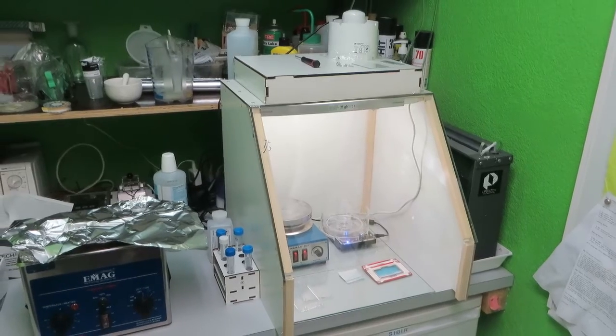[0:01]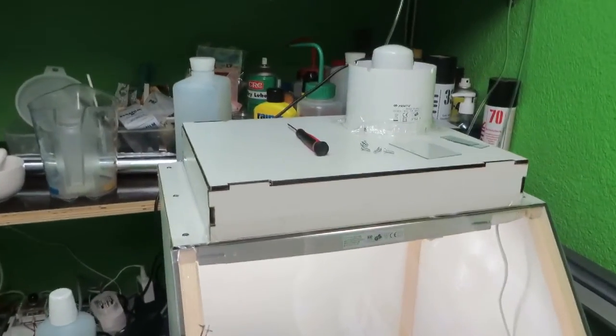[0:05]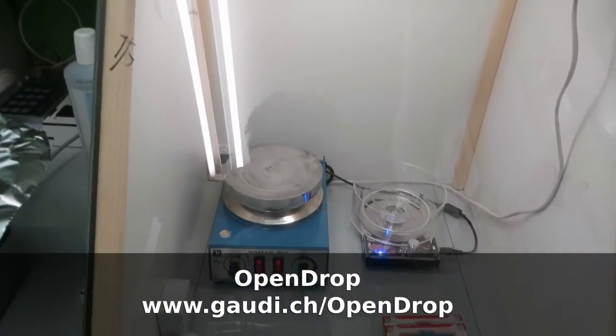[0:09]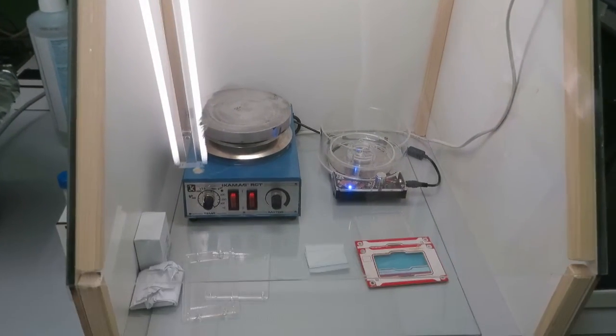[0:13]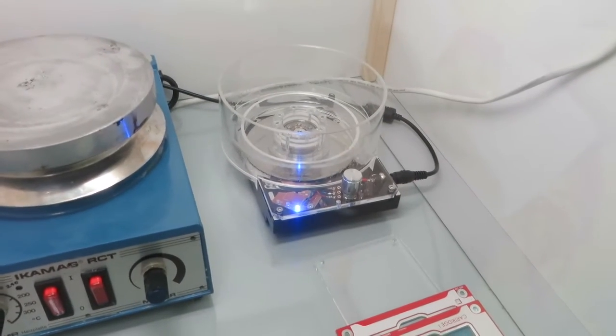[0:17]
Welcome back to the second part of this video showing how to do the hydrophobic coating for the electrowetting on the OpenDrop. To do the coating, I built this simple clean room. It's quite important to work clean if you want to get good coatings. In the clean room, there is a spin coater made from an old hard drive and a hot plate. The air in the cabin is filtered through this HEPA filter.
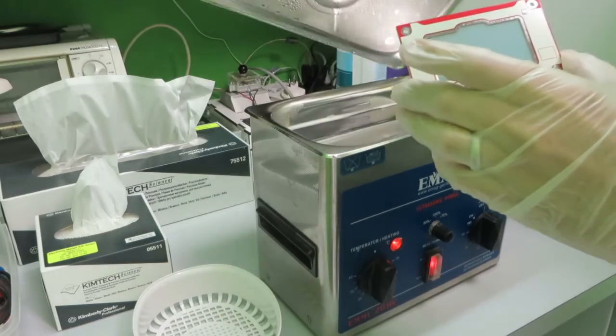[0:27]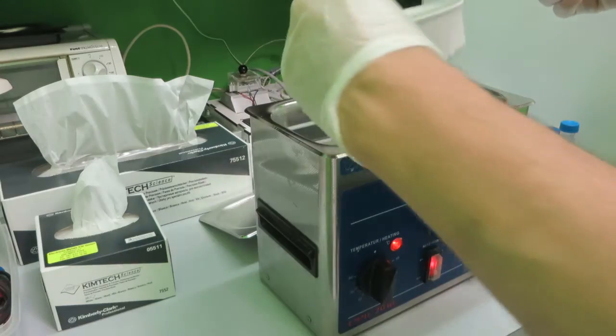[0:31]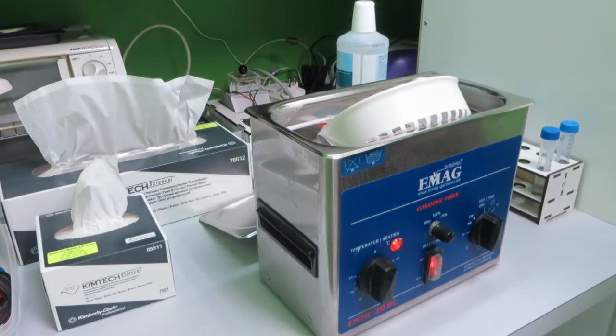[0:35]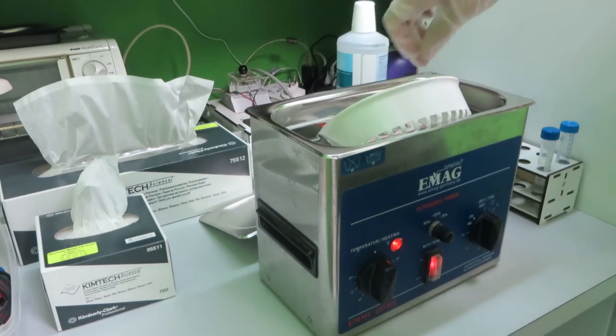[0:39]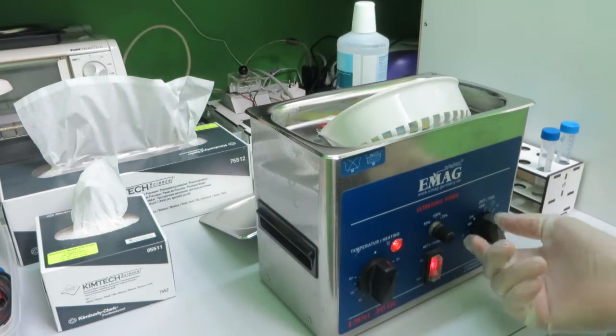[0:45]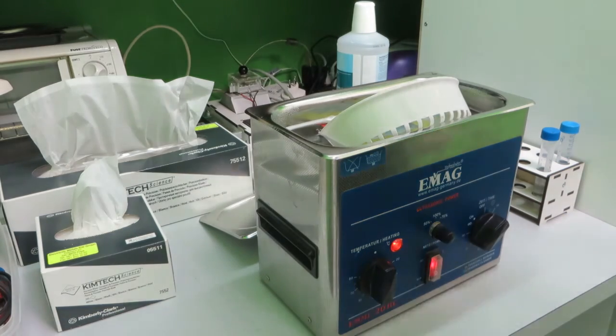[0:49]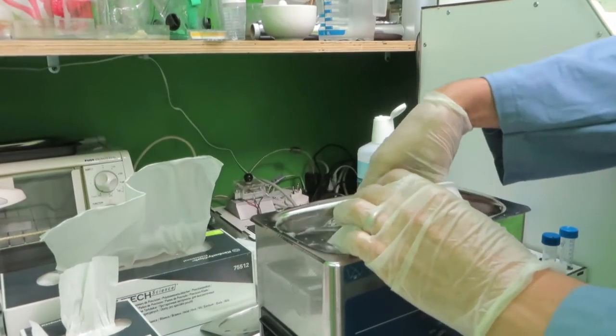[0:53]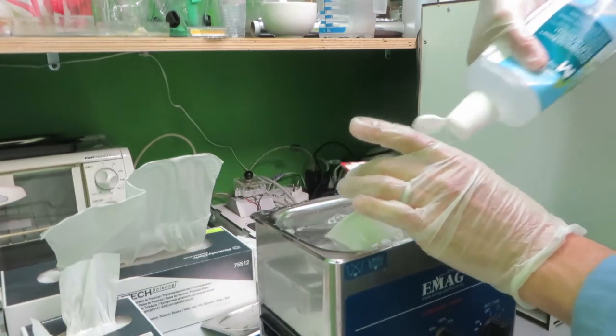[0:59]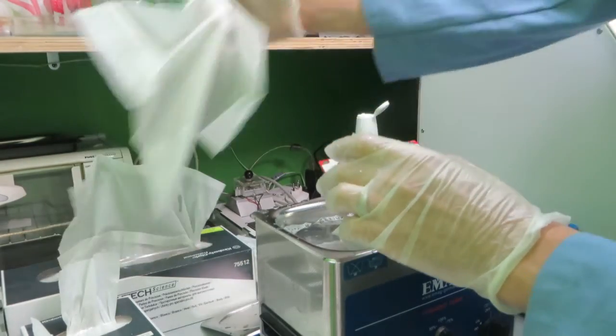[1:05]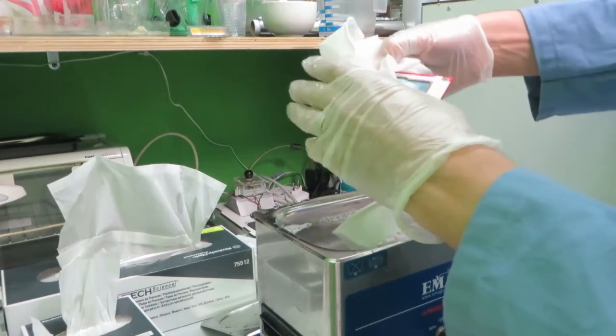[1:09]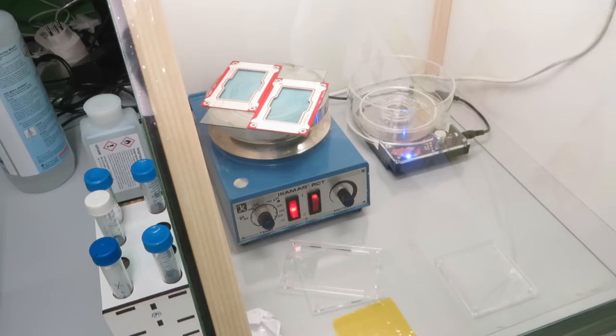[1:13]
First step is to clean the carrier with the foil that we prepared before. For this, I use an ultrasonic bath. The bath contains pure water, a mixture with isopropanol and some soap. I put the carrier in the bath for about 15 minutes at 60 degrees Celsius and then rinse it with pure water. I use this clean room paper to dry the foil and the carrier and then put it on a hot plate at around 80 degrees to completely dry.
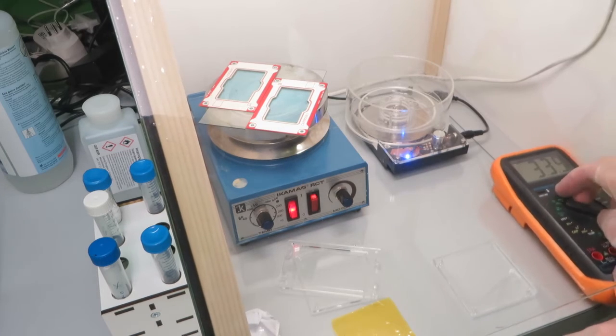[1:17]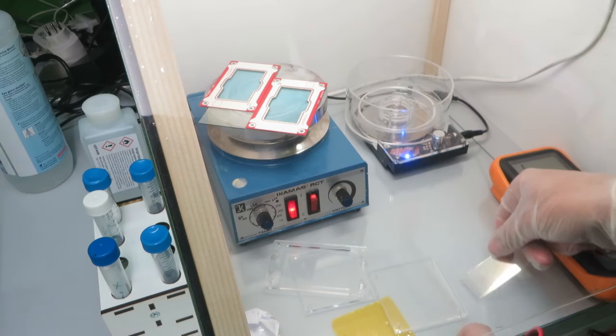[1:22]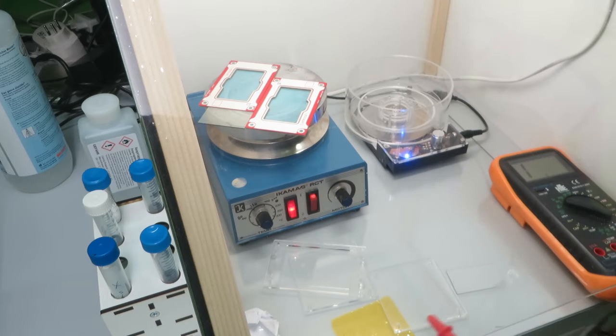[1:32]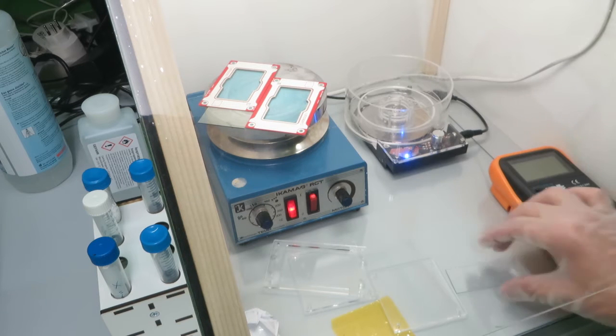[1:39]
Once the coated glass and the carrier are dry, I measure on which side is conductive of this ITO coated glass to make sure to apply the hydrophobic layer to the conductive side. Next, I attach the glass on a plastic carrier using Kapton tape. This carrier has just the right size to fit into the spin coater and is then easier to attach to the spin coater.
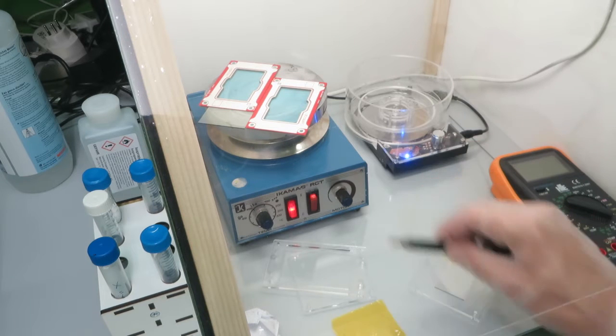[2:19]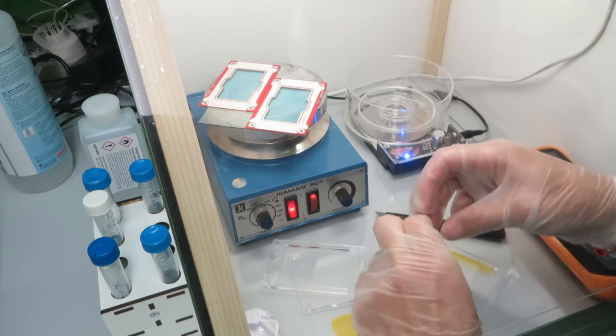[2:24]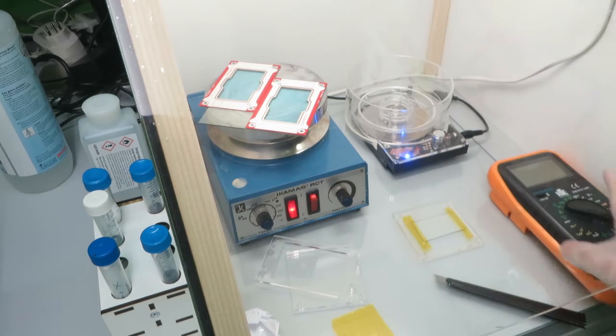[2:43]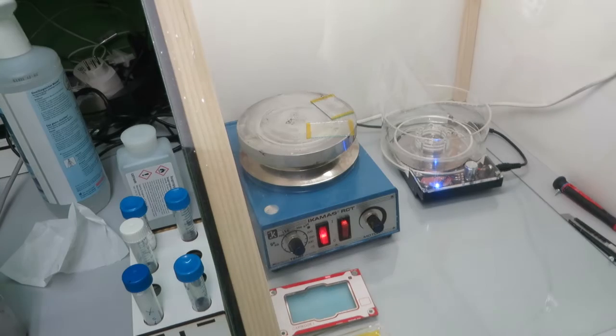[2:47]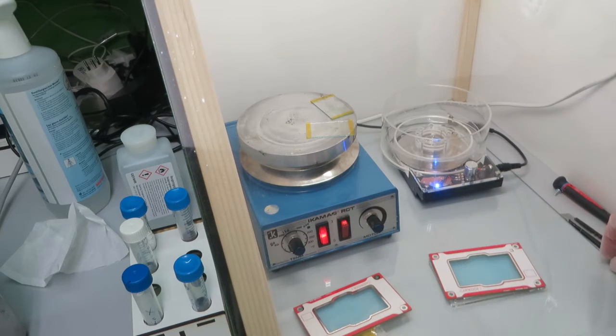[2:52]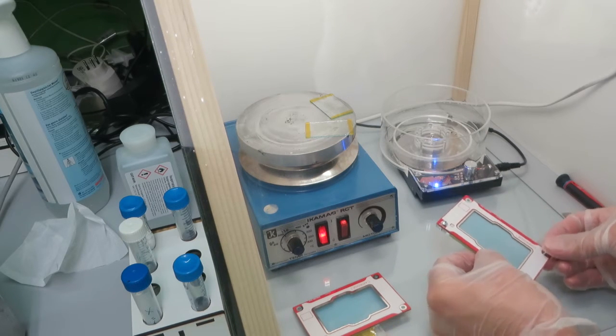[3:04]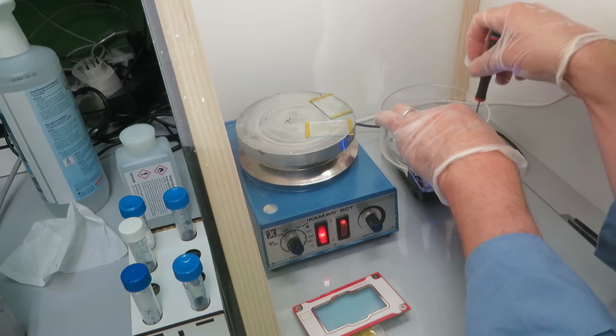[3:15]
I use gloves to make sure that no grease or dust is coming onto the clean surface. Next, I take the carrier with the foil attached and also put it on an acrylic base to install it in the spin coater. I just use small screws for this and screw it onto this rotating base in the spin coater. I may be going to do a separate video on how I built this spin coater. It's basically inspired by a video I found online by Applied Science.
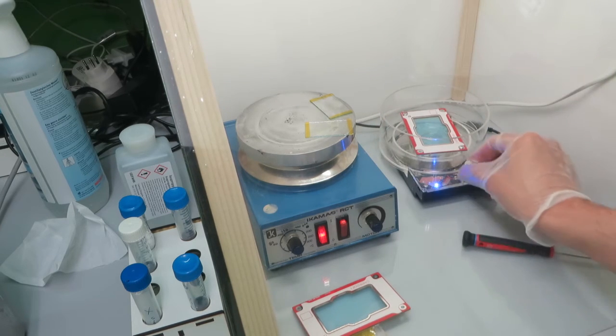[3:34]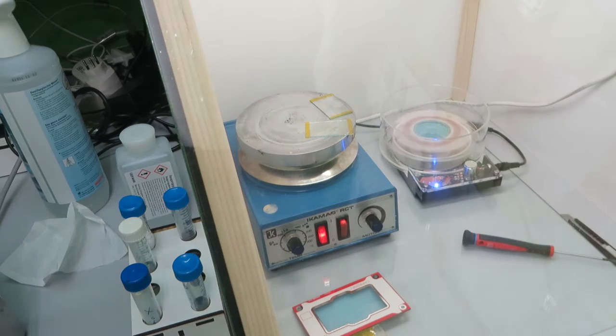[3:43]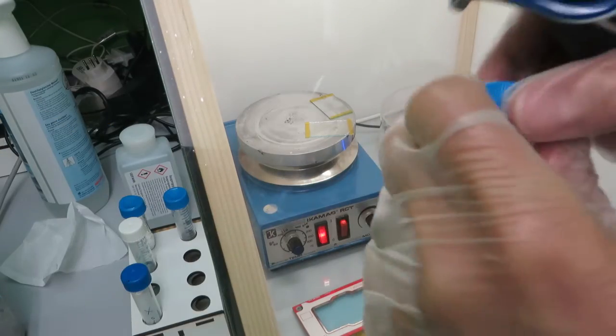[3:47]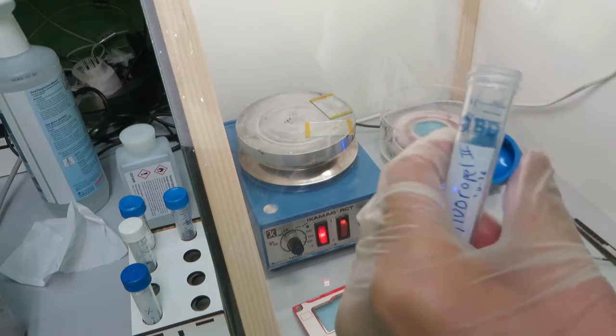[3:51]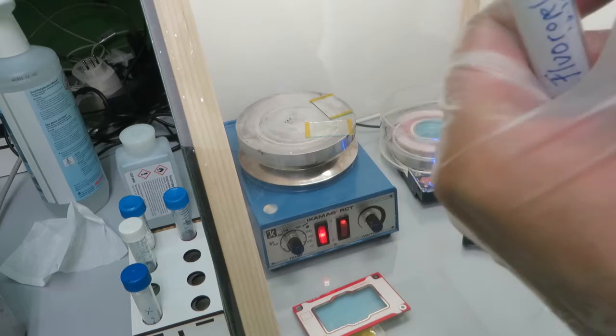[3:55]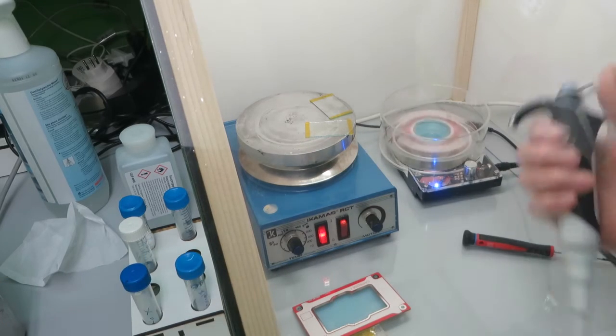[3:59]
Once the carrier is installed, I spin it up and then apply the liquid coating. The coating I use is a Fluoropel from Cytonix. It's a fluoropolymer solution and I use about 150 to 200 microliters and I spin it on the rotating carrier or on the rotating foil.
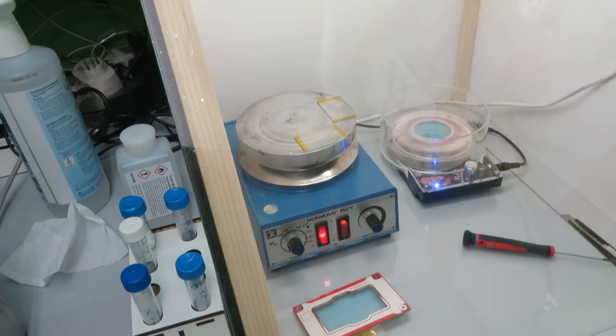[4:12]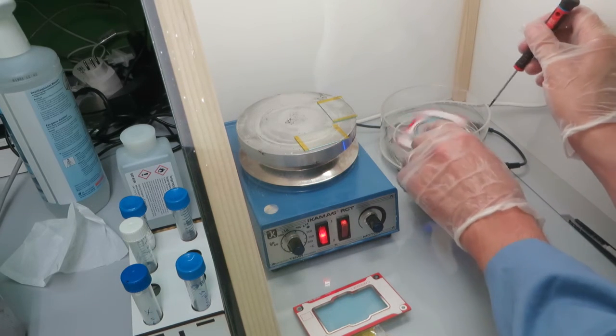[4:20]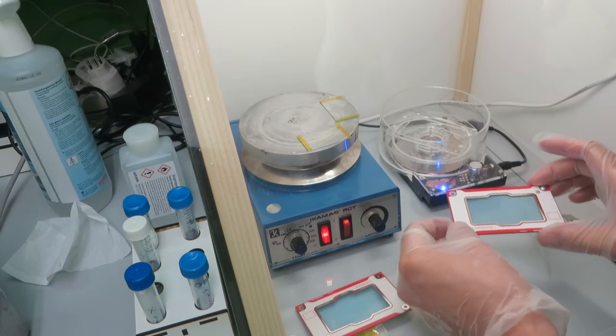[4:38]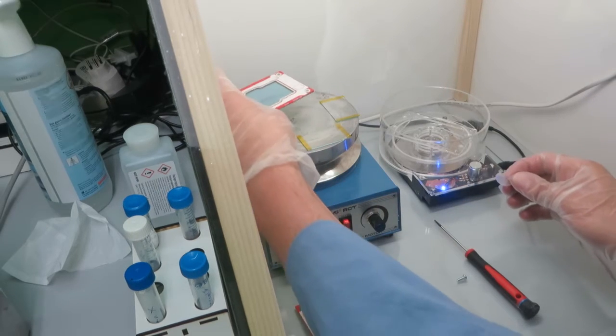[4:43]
I've tested with applying it while it's not spinning and spinning. I'm not quite sure which is getting better results. The spinning is about 30 seconds at a speed of 3000 RPM. Then I remove it and put the carrier back on the hot plate. On the hot plate, I first cure it at 80 degrees for about 20 minutes and then increase the temperature to 150 degrees.
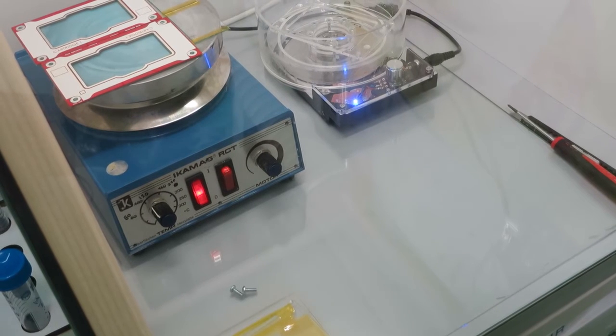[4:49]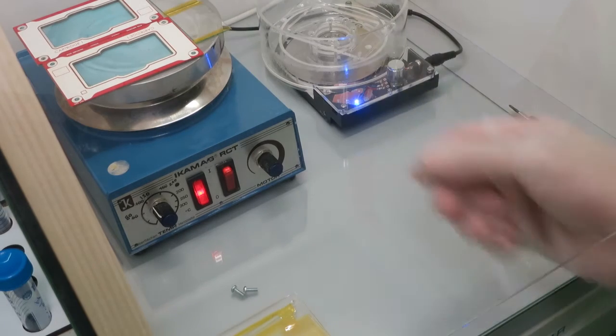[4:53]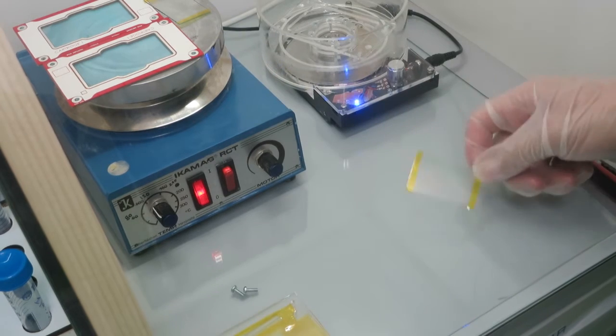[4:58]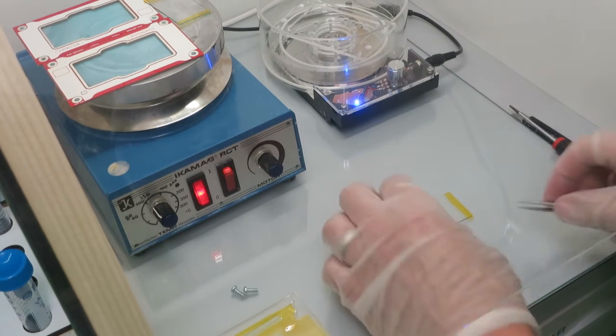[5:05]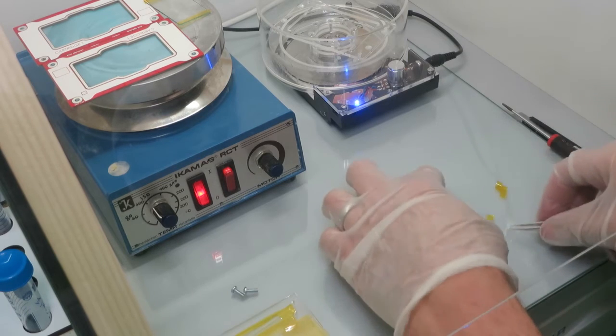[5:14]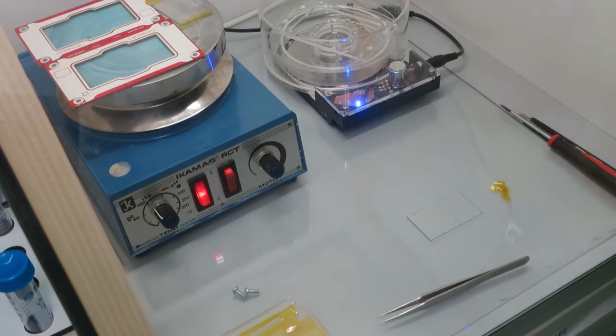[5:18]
I did the same also with the glass slides. It's not shown in the video as I lost a piece of filming there. Once both the glass slide and the film are cured for about half an hour at 150 degrees, I remove the Kapton tape on both sides. This exposes the conductive part of the glass again.
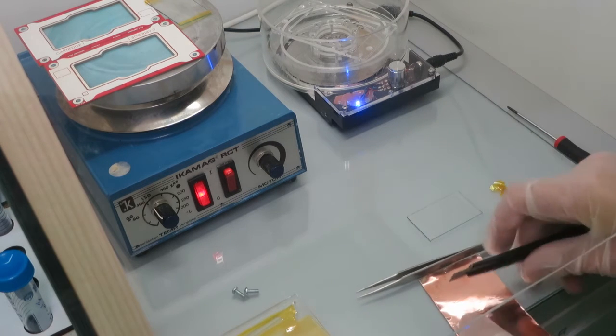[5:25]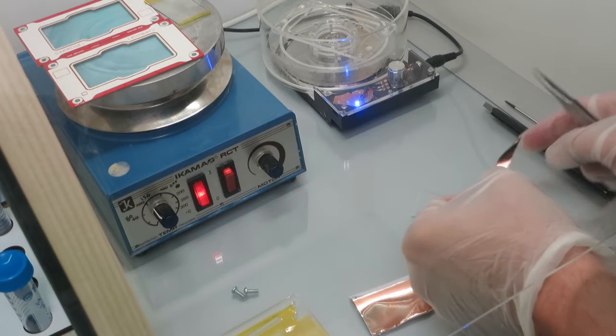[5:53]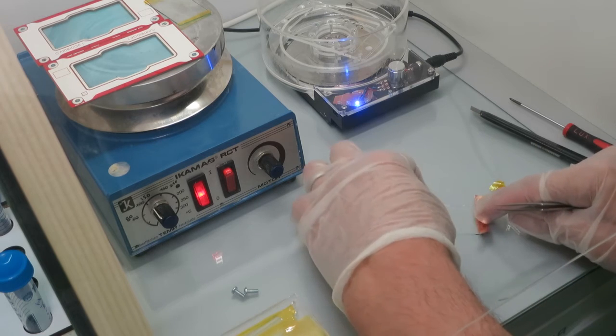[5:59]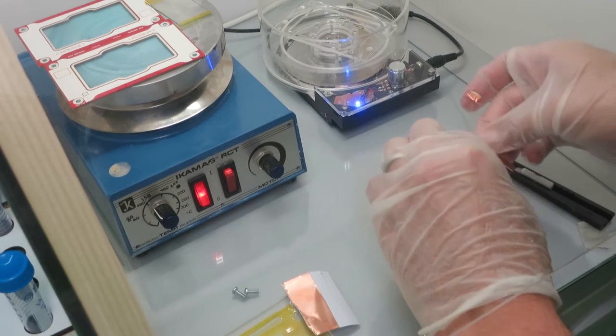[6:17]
And then I use this copper tape, which is a special copper tape which is conductive on both sides. So it has a glue that is conductive on the back. You can get this for quite cheap at SparkFun and other stores that have the same material. And then I take a part of this tape and attach it to the side so that the conductive glue is in contact with the ITO. I cut it to the right size and then I fold over the overlapping part so that I have a connection from the bottom side of the glass to the top. I do this on the second end in the same way.
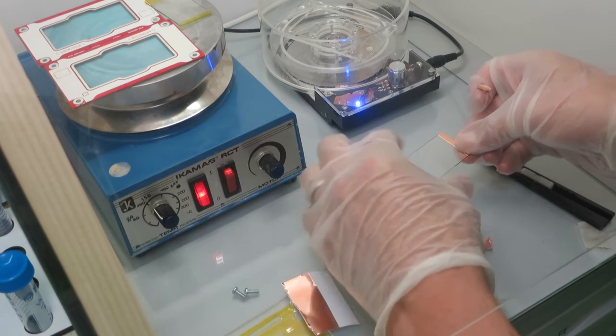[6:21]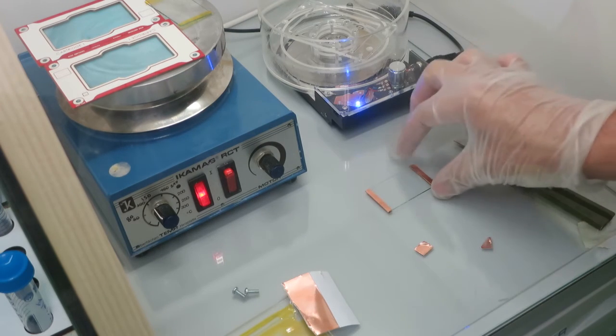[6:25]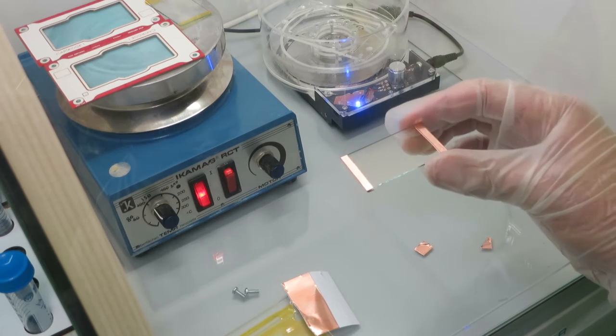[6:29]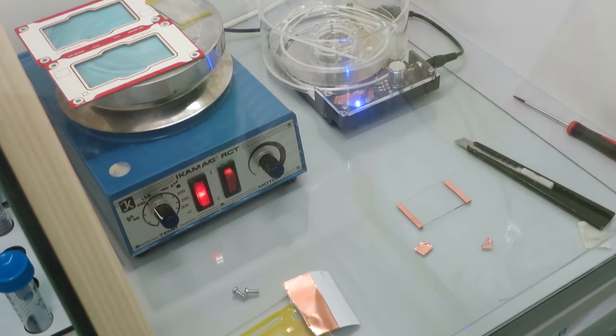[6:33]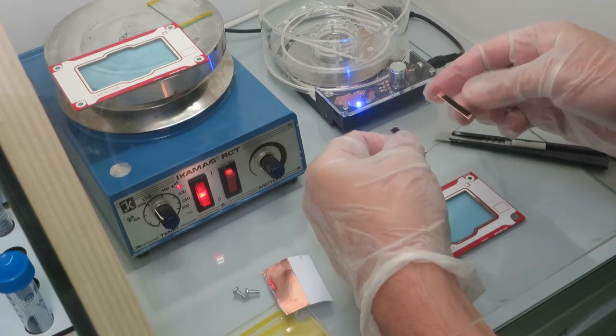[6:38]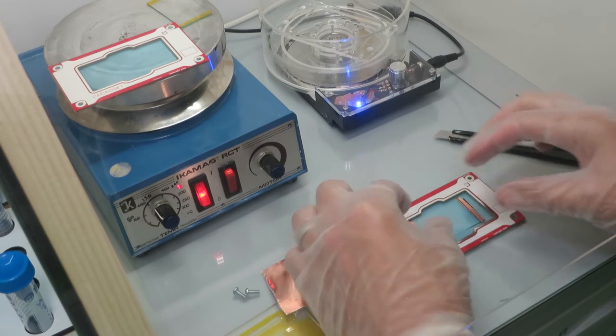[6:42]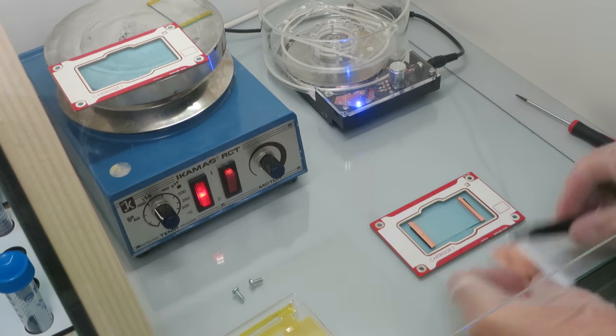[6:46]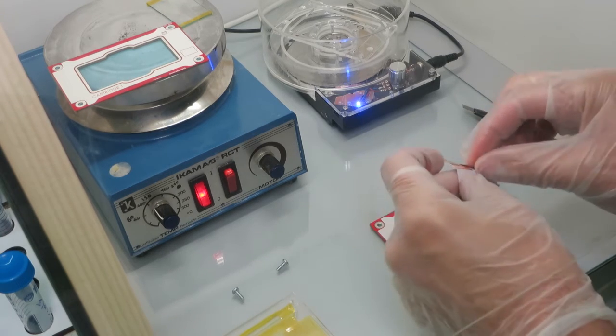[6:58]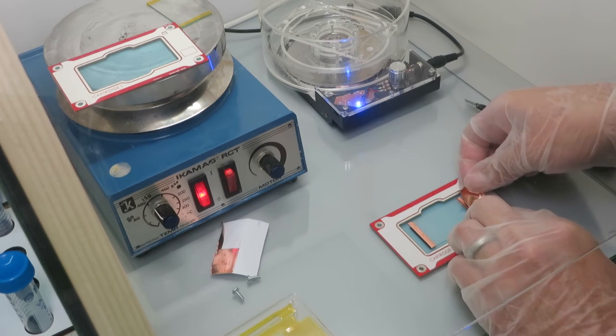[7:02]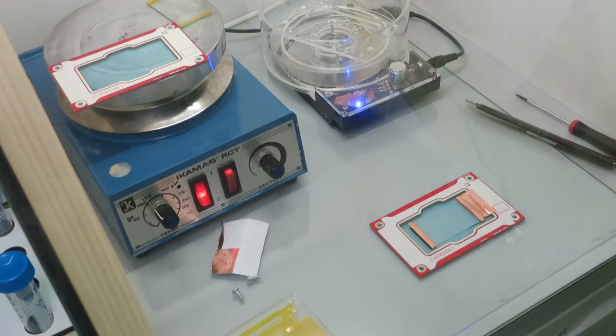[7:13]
Here I put on top another piece of just regular black tape to make a bigger gap. You want to experiment a bit with the gap that you want to have between the foil and the glass. It's between one or two layers of tape I found to be best. Next, I attach another piece of this double-sided copper tape to make the contact between the glass slide and the frame of the carrier. This PCB carrier has a metallic frame, as you can see, so then it can be connected to the ground or to the feedback of the device.
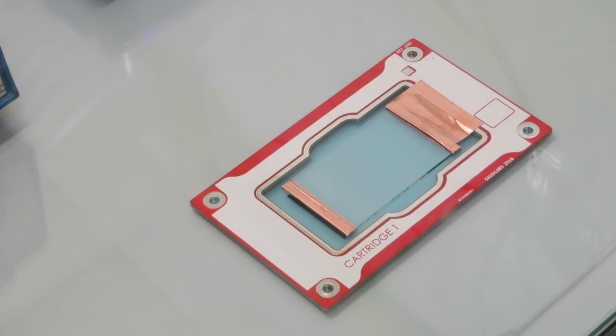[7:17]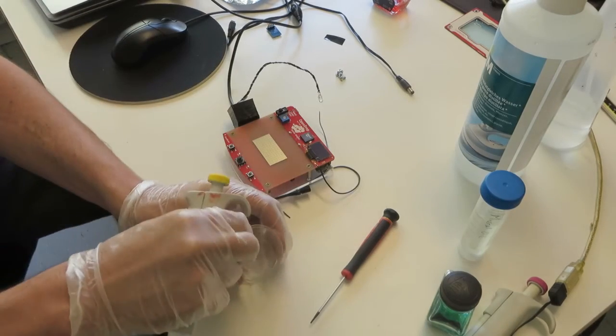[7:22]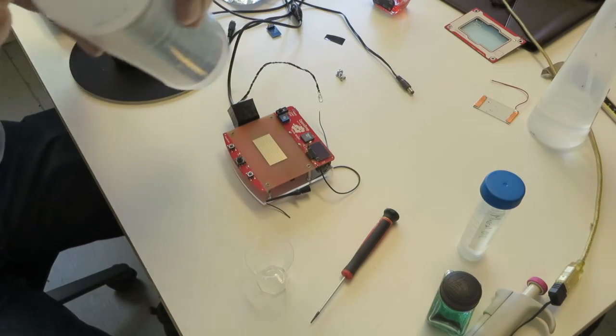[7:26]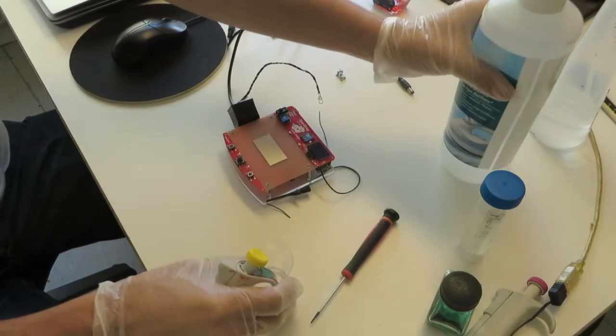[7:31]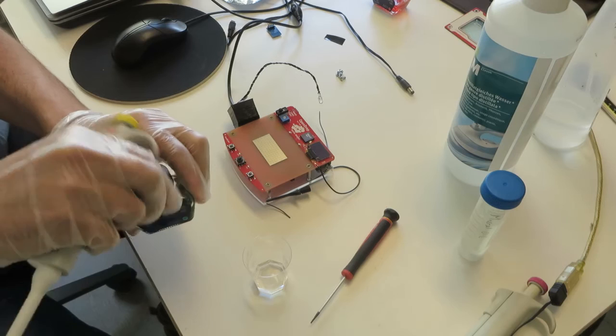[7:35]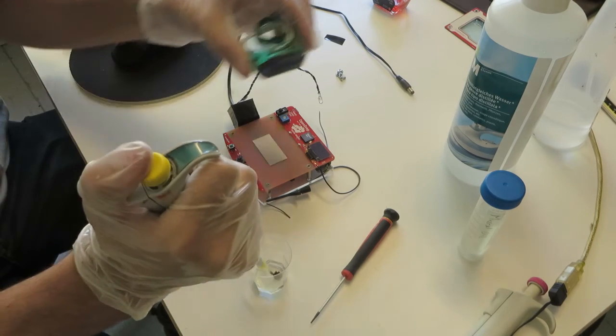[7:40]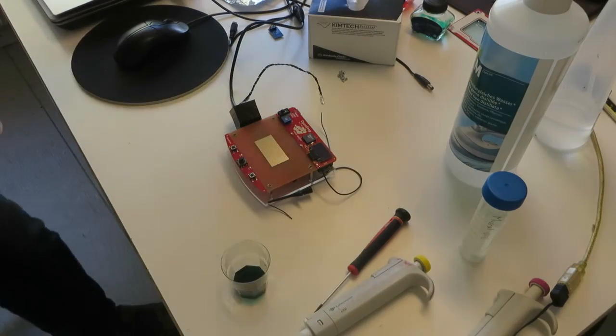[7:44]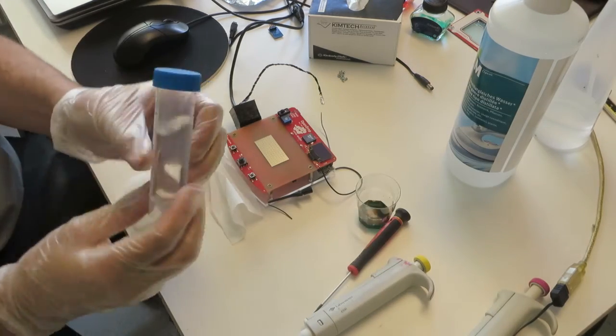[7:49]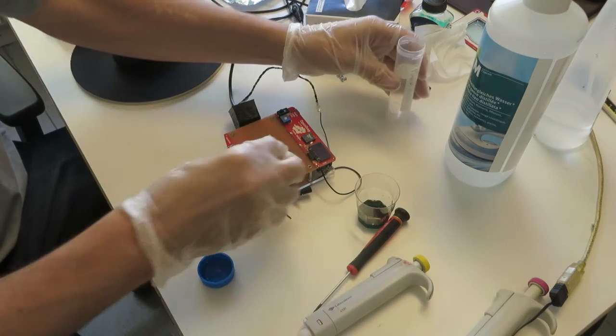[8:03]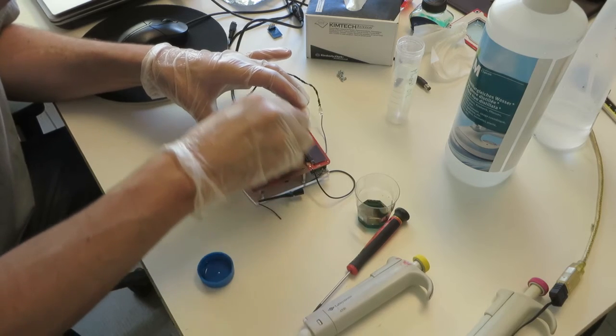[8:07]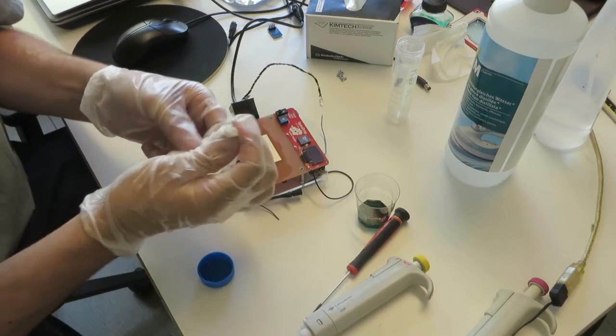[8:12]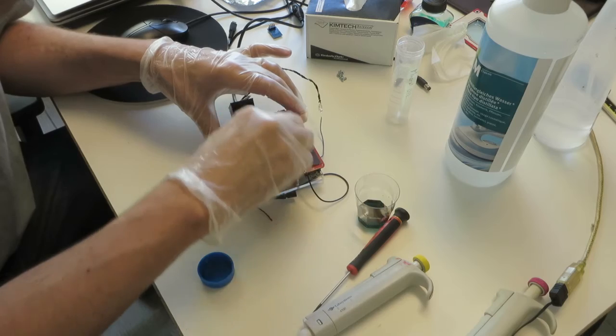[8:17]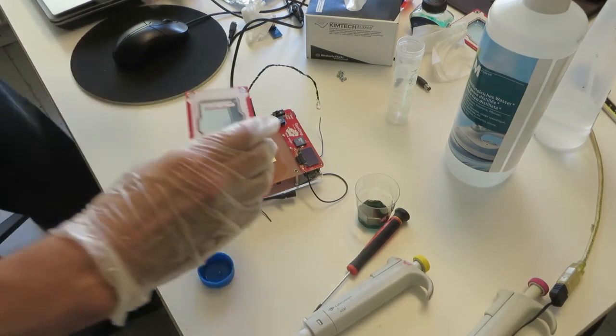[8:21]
Next is testing the carrier on the OpenDrop device. For this I use water and some ink. It's just regular ink and purified water. To apply the foil carrier to the OpenDrop, I use some mineral oil that I apply with a piece of paper to the top of the electrodes. Here I found that maybe the mineral oil is not the best solution, or you want to try with different mineral oils. I think it's quite important to have close contact without air between the foil and the electrodes. If this oil film is the best, or if there are other solutions, is still part of the research I'm doing.
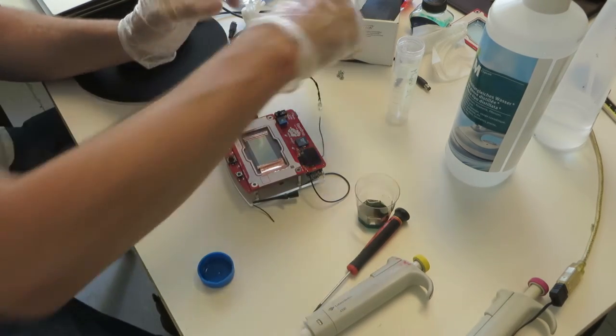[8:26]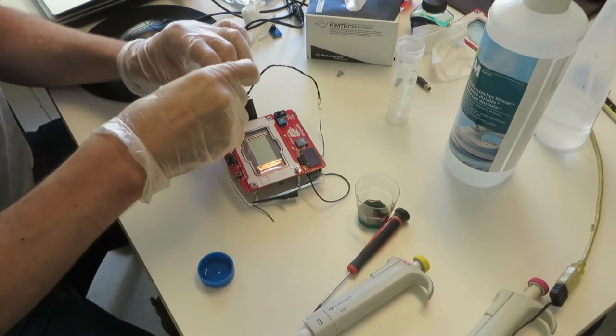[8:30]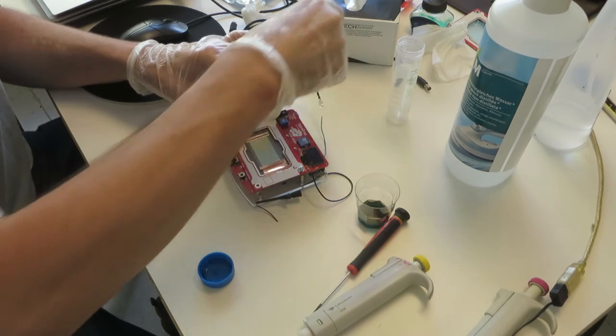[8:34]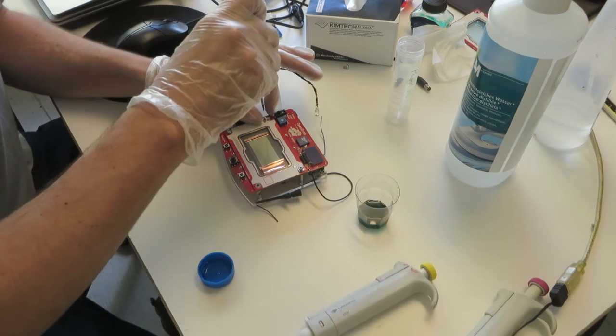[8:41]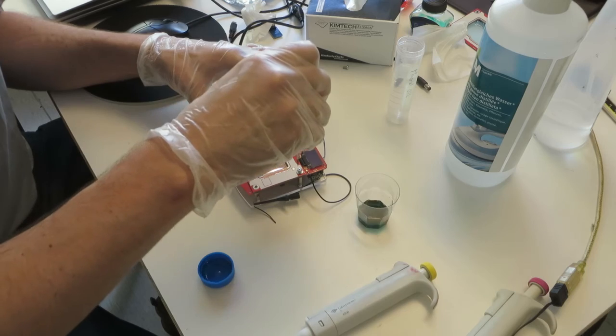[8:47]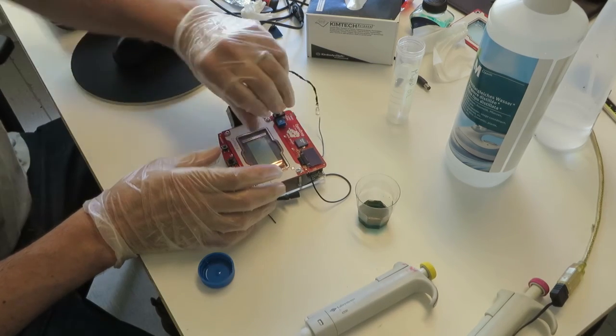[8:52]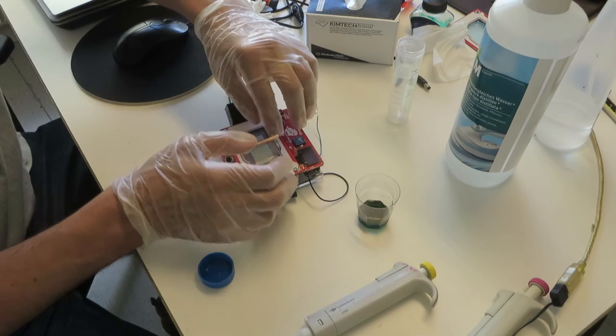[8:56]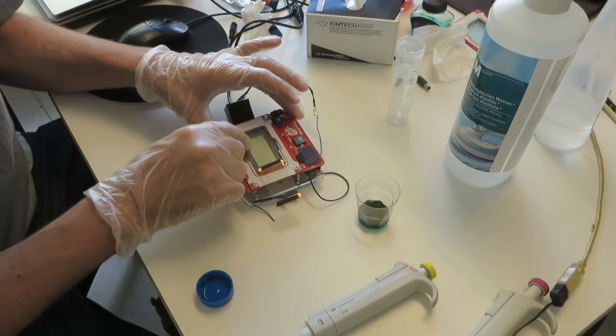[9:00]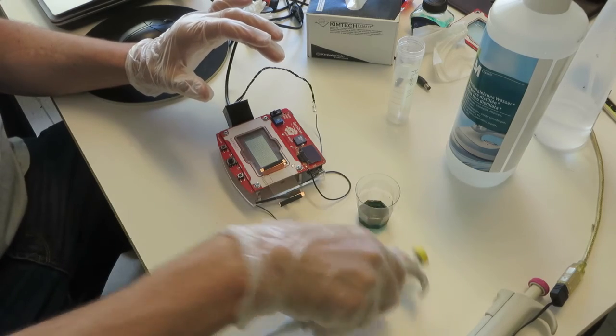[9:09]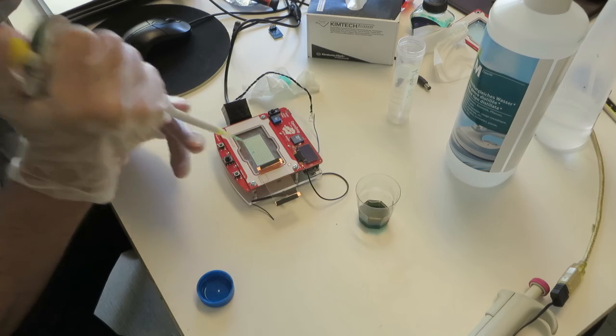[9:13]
Once the oil is applied, the foil on the carrier can be attached on the device by means of the four screws. This will also make the contact between the conductive glass and the device. Since the glass slide is only attached on one side, it can be opened like this. And that's quite convenient to then put the test droplets or liquids into the device. I take a drop of 1 or 2 microliters, put it directly on the foil and close the glass top cover.
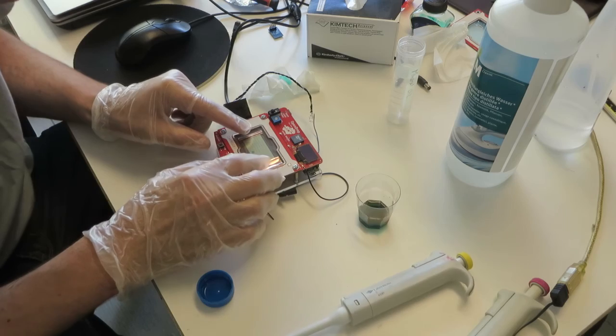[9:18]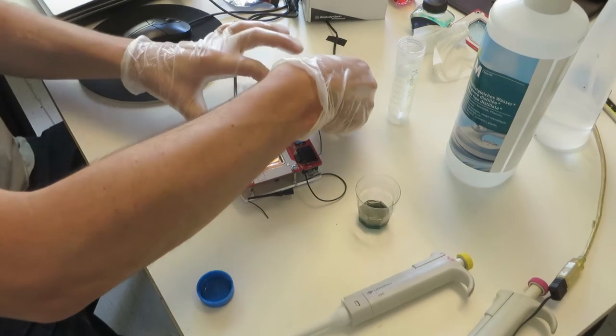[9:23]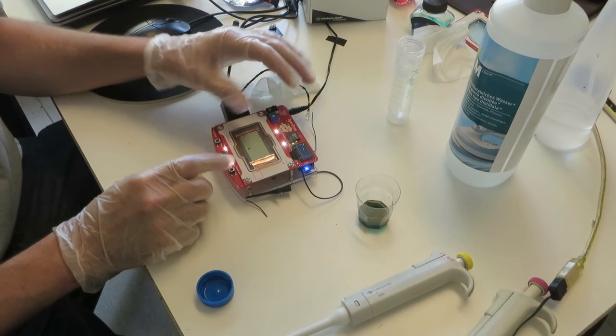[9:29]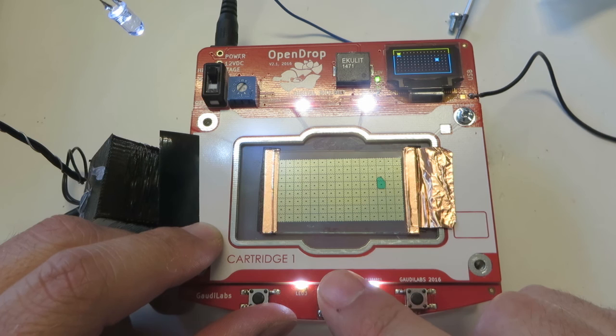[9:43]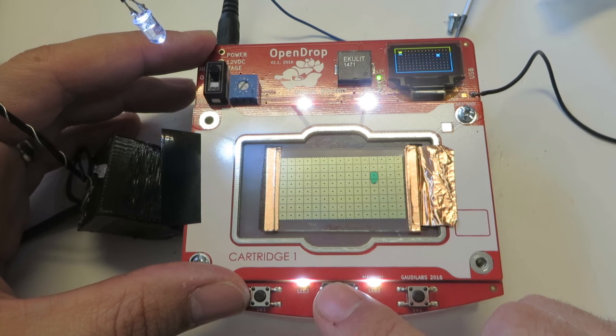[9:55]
And now power the device and turn on the high voltage. With the little joystick, I can now move around the droplets and test the coating. As you can see, the droplet is moving. Sometimes there are electrodes that don't work that well. It can be that there is a bad coating or a little dust, and I don't want to hide this in this video, so that you see that sometimes if the coating is not good, it doesn't work as well as in these demo videos.
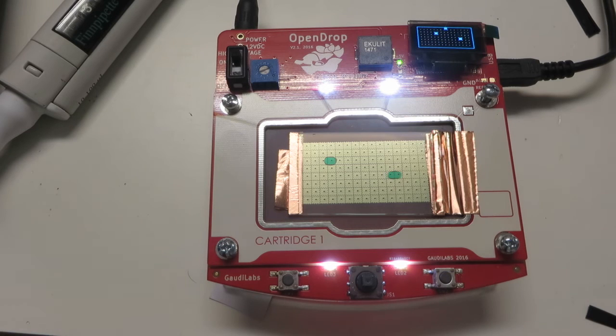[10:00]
Generally, we got quite good results with this coating, and we'll continue our research on low-cost electrowetting.